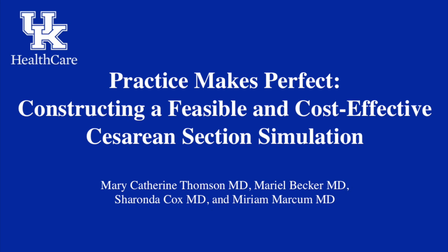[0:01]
Practice makes perfect. Constructing a feasible and cost-effective cesarean section simulation.
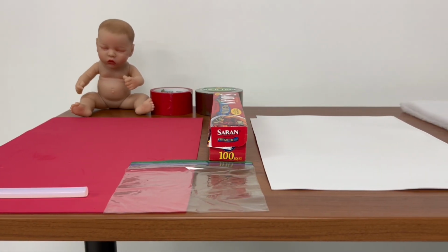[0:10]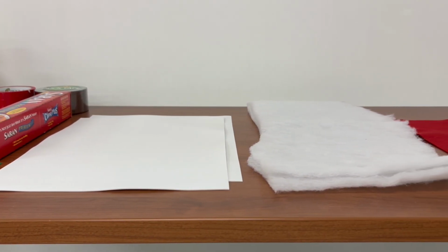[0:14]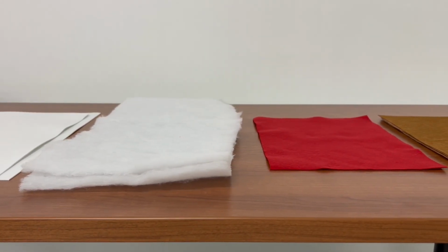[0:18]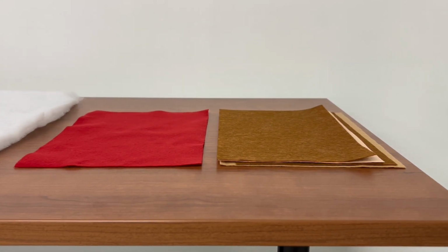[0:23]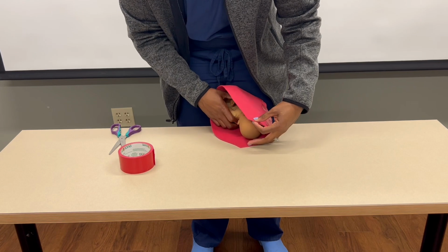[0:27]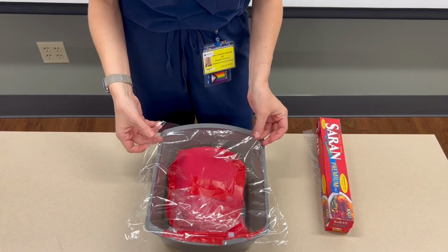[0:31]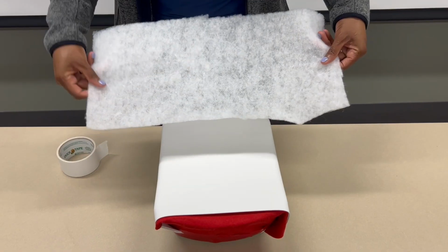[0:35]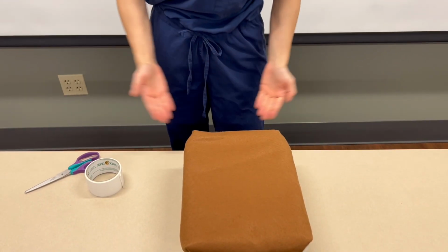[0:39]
All right, in this video, we are going to walk through construction of the low-technology C-section simulation that our program here at University of Kentucky has used for many years to help orient our new interns. Many programs and educators, of course, create and use C-section simulations. We feel that our model is particularly easy to assemble, maintains a relatively high amount of fidelity for the low technology nature of the simulation, and all with an overall low cost.
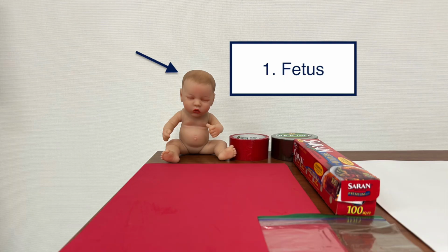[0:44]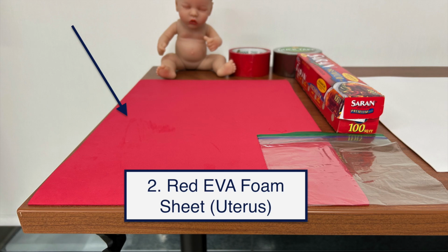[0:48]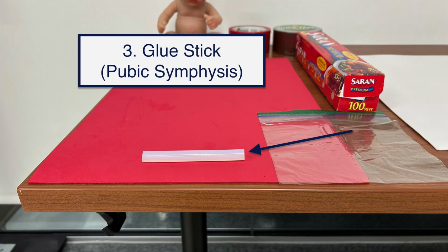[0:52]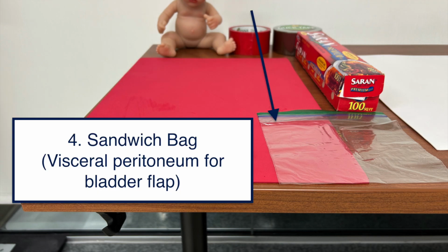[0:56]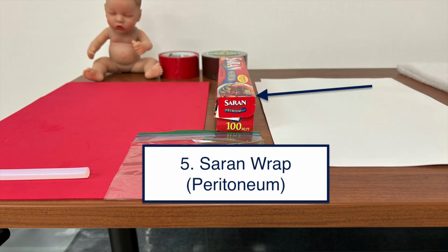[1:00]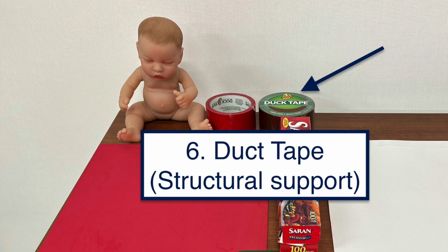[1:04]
Let's start by talking about what you will need. Number 1, your fetus. 2, red EVA foam sheet for the uterus. 3, glue stick for the pubic symphysis. 4, sandwich bag for an optional bladder flap. 5, saran wrap for the peritoneum. 6, duct tape for structural support.
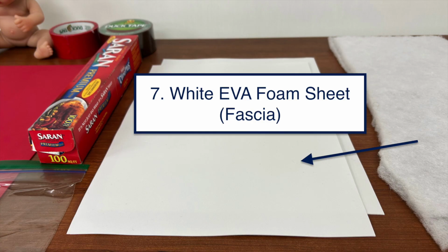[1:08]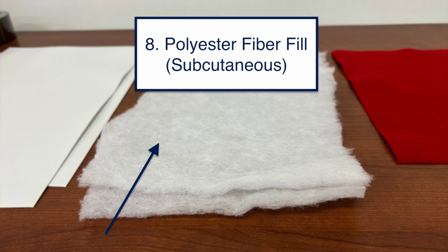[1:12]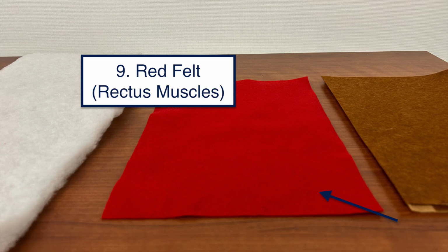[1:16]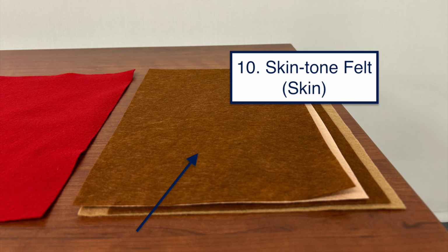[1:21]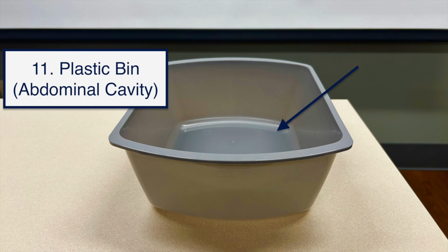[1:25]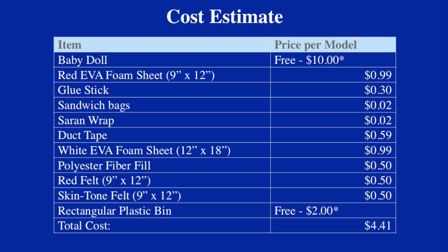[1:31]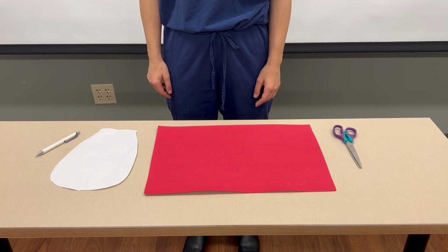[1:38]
7, white EVA foam sheet for the fascia. 8, polyester fiber fill for the subcutaneous layer. 9, red felt to represent the rectus muscles. 10, skin tone felt for, you guessed it, skin. And last but not least, a plastic bin. We prefer the hospital variety for your abdominal cavity. Here is a brief summary of the estimated cost for supplies. And with that, let's get started.
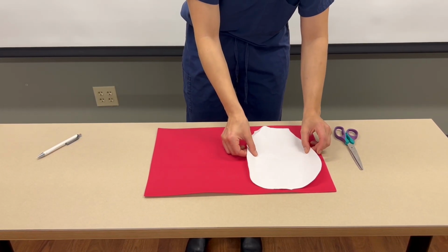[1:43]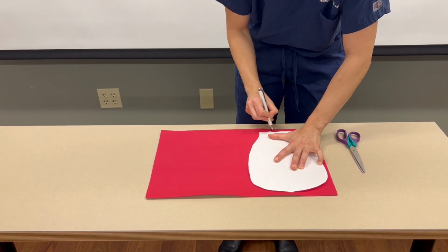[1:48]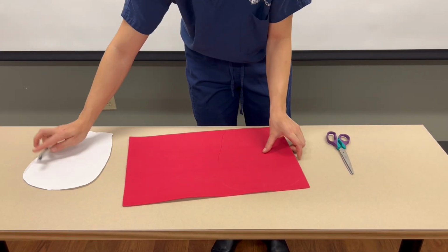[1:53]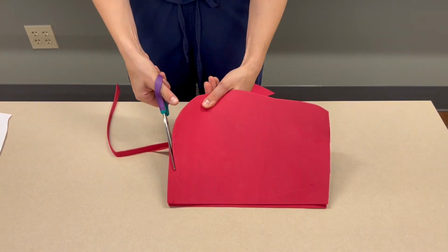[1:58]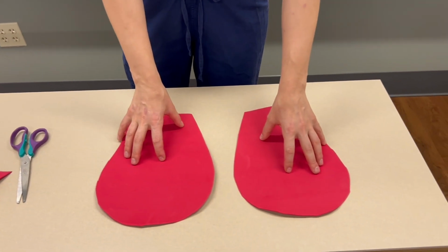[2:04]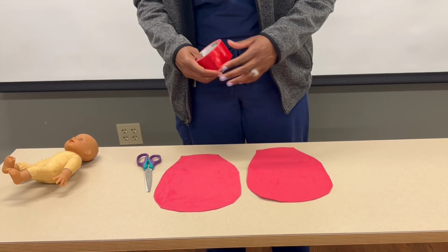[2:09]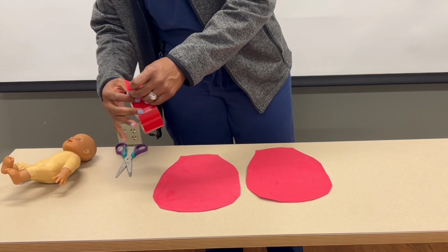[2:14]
Make your uterus. Create a template or use the one provided to cut the red foam sheets into the rough shape of a uterus. You would need 2 per model, one for the front and one for the back. Now that we have our 2 halves, it's time to assemble our uterus. Tape the 2 halves of the uterus together with duct tape, leaving the inferior edge, i.e. the cervical area, open.
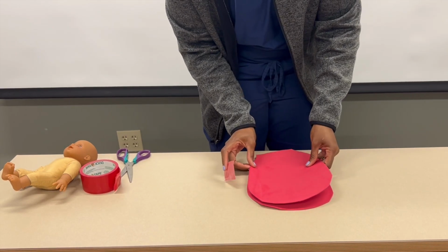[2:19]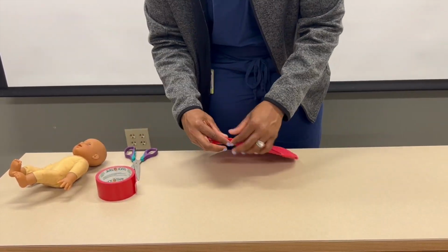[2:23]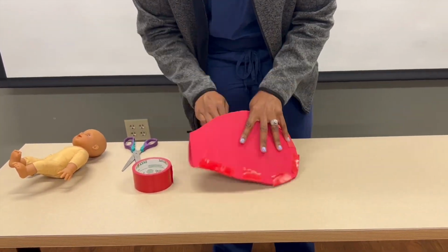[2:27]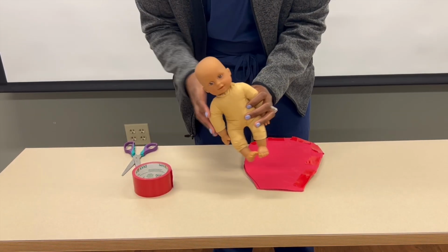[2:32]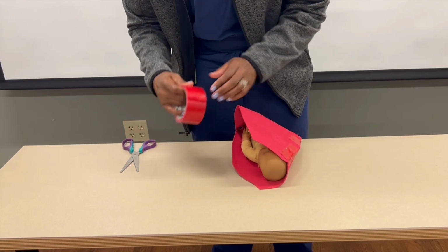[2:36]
Once you have taped approximately 2/3 of the uterus, go ahead and insert your fetus. Once your fetus is in the desired position, tape the uterus the rest of the way.
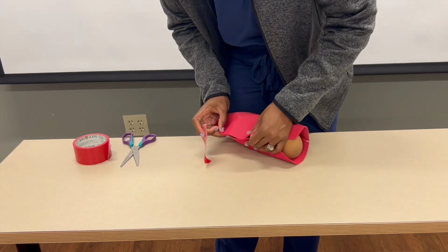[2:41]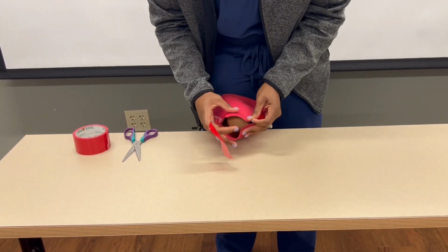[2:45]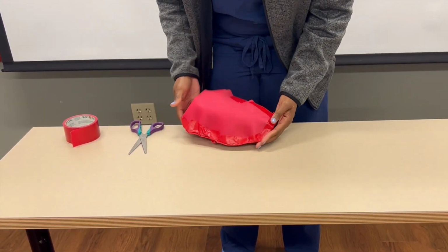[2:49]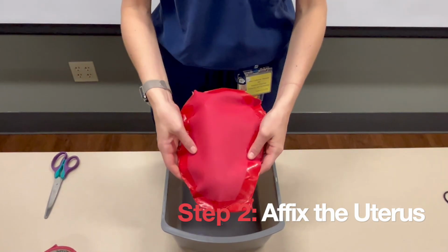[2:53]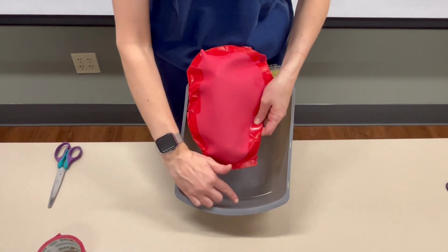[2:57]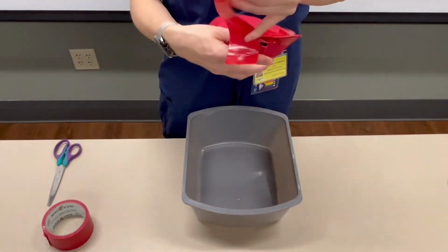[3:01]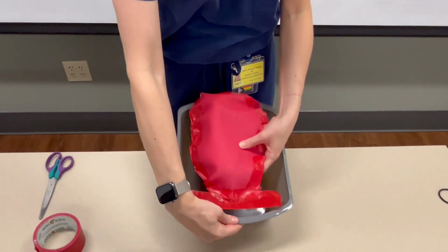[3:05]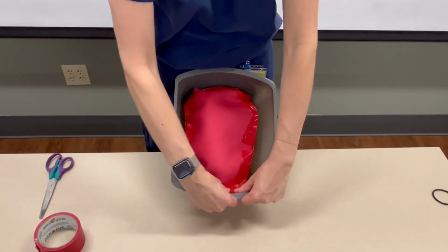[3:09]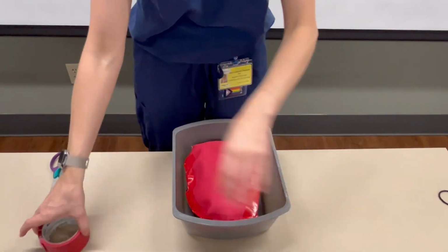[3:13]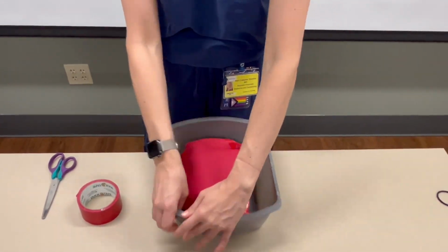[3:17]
Step 2, affix the uterus. Place your gravid uterus inside the plastic bin, aka the abdominal cavity. Next, tape the cervical edge of the uterus to the front wall of the plastic bin. It is important in this step to make sure that you tape the uterus very securely so that the learners can exteriorize the uterus after the baby is delivered.
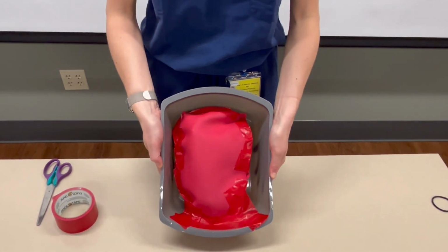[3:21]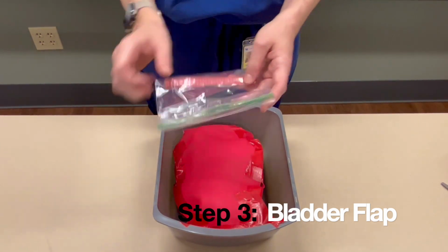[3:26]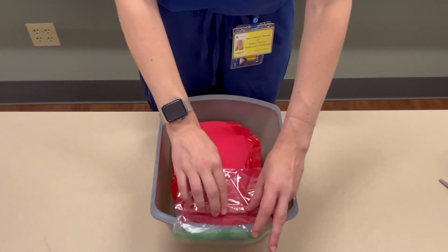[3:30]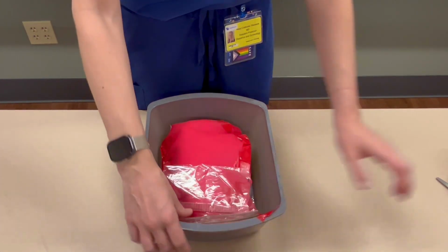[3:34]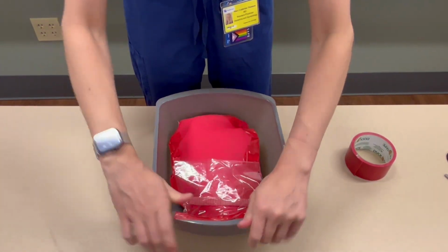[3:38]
Step 3, bladder flap. Similar to an actual surgical practice, you can choose to create a bladder flap. To do this, affix the Ziploc bag to the front of the uterus. The 2 layers of the bag represents the peritoneal reflection.
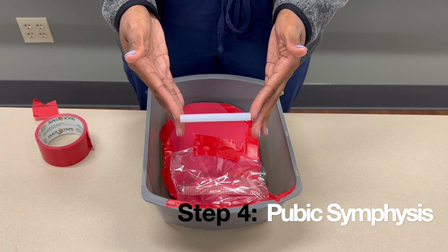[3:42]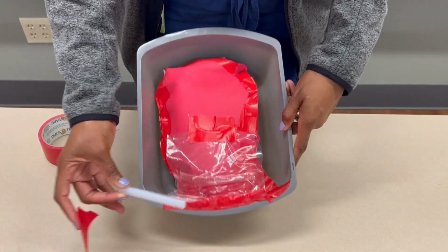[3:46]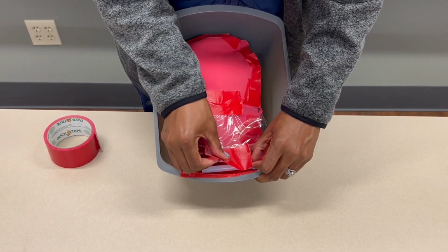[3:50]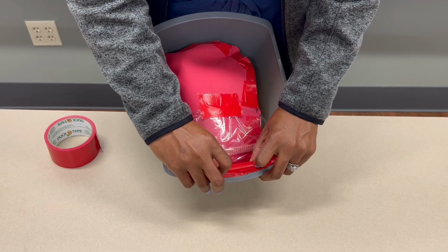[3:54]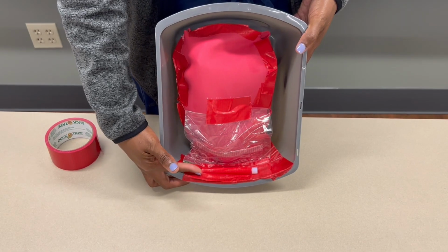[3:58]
Step 4, create a pubic symphysis. To allow learners to practice using landmarks to plan their Pfannenstiel incision, it is helpful to create a pubic symphysis. Here, we are using glue sticks from a hot glue gun, but really any rigid cylindrical item will work.
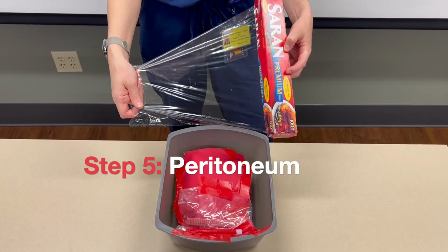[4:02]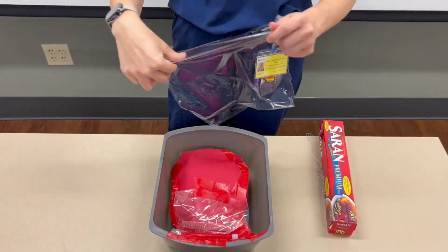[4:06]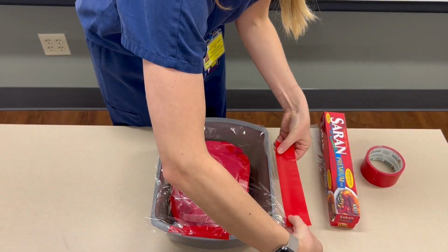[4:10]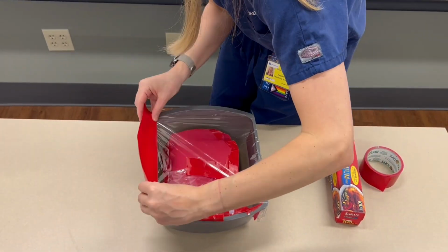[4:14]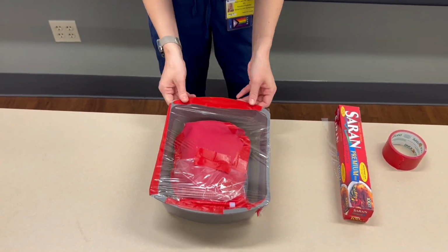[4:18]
Step 5, peritoneum. Tear a large enough piece of saran wrap to cover the entire opening of the basin. Tape it in place. Again, taping securely helps to create tension and make it easier for learners to bluntly enter the peritoneum.
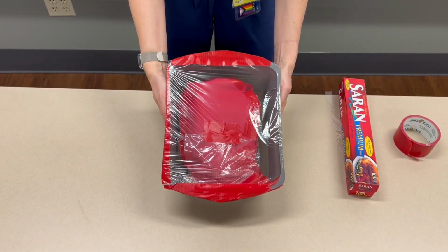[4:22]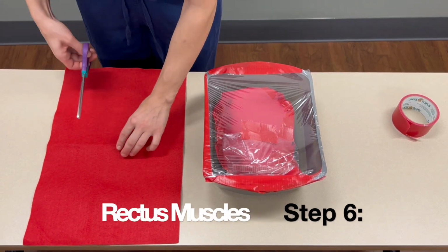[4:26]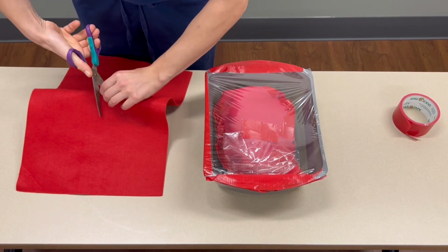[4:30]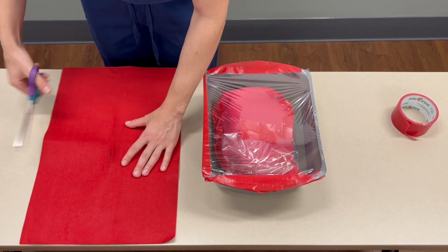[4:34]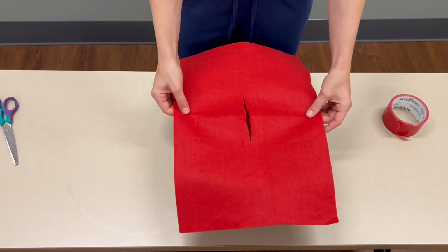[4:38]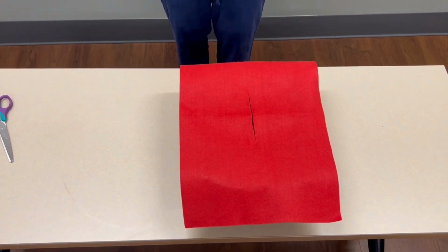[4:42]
Step 6, rectus muscles. Take your red felt and cut a vertical line in the middle of the sheet, leaving some amount on both the superior and inferior aspects of the sheet intact in order to maintain stability of your rectus muscles. As shown, place the felt over the basin and tape in place.
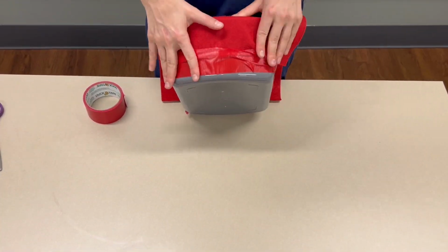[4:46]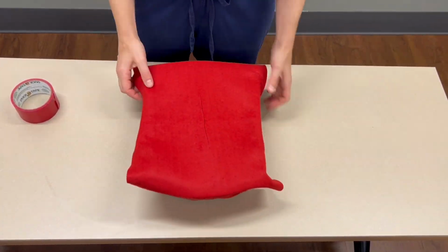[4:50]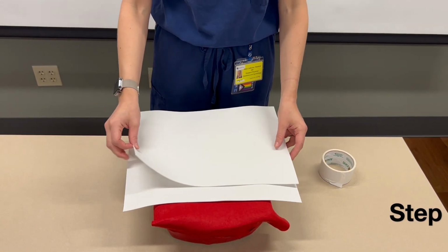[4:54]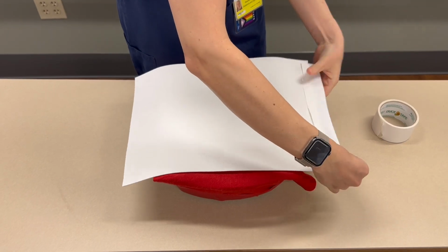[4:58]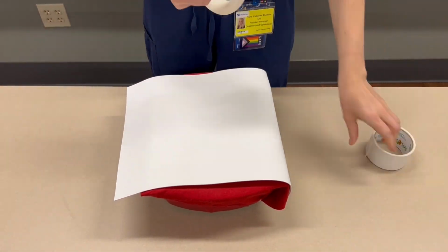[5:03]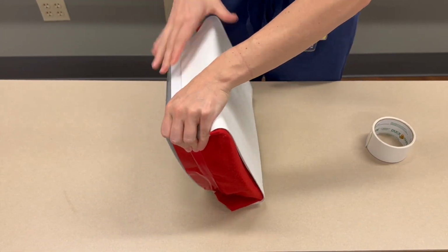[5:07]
Step 7, fascia. Use the thin white foam paper for this step. We often do a double layer to mimic the 2 layers of the fascia, but one can suffice. Place on top of the rectus muscles and over the basin to tape it in place.
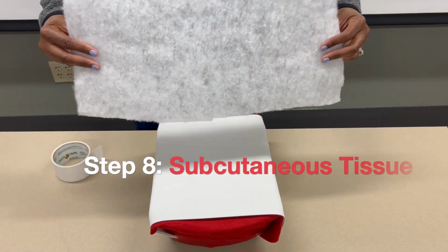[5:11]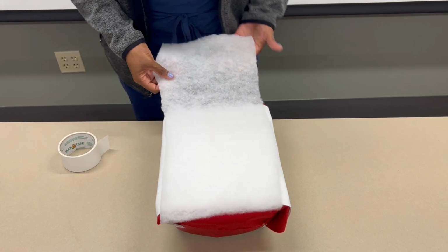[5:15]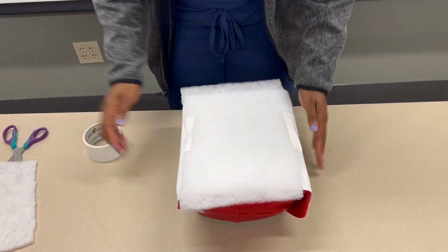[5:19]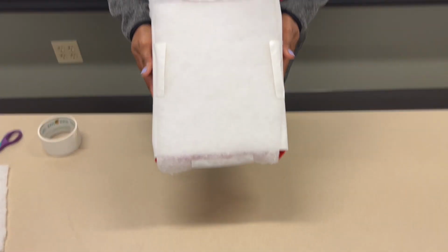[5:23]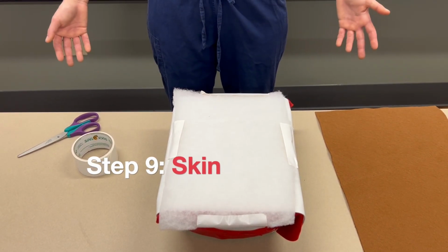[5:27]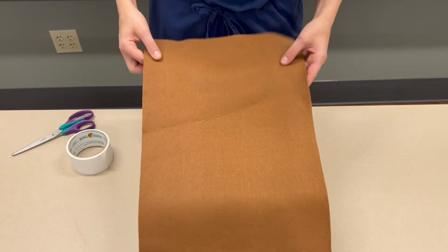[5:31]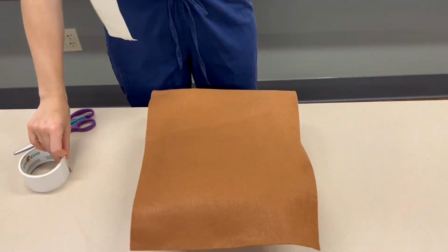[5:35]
Step 8, subcutaneous tissues. Now cut the polyester fiber fill to size and place over the fascia. Next, tape into place. Step 9, skin. Last, but certainly not least, cover the entire basin with skin-colored felt and tape it into place.
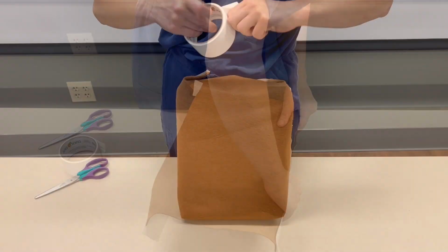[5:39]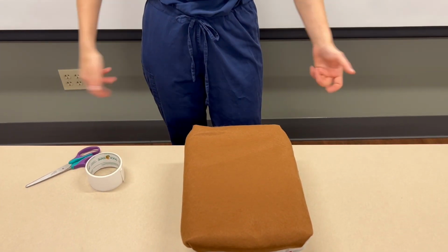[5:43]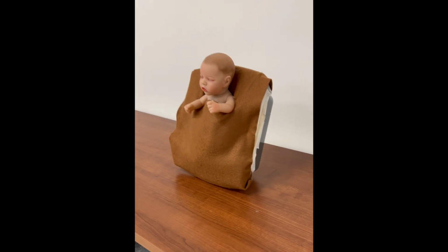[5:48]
And voila! Now it's time to have some fun and learn about cesarean deliveries.